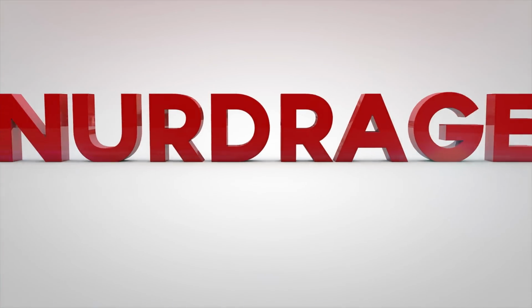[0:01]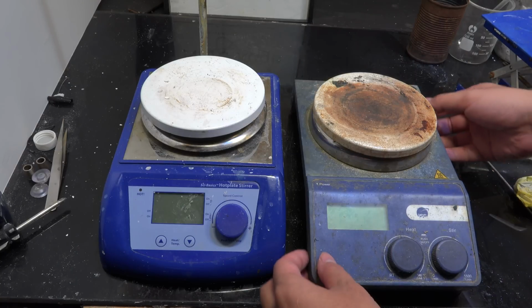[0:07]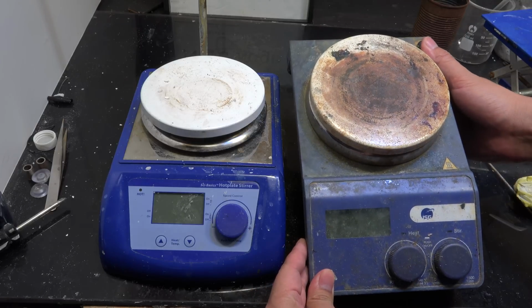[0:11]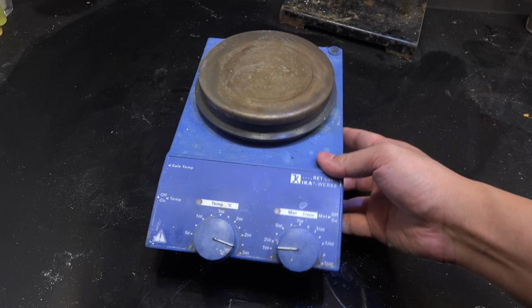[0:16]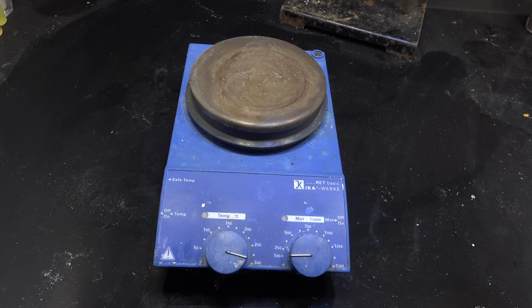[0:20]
In a previous video I asked for help in repairing my hotplate stirrers. I received a huge number of suggestions and offers and I'd like to thank you for helping me out. First, an engineer generously fixed my old IKA hotplate. The particular problem was beyond my ability to fix but I'm glad it was within theirs. If you're watching, thanks a lot.
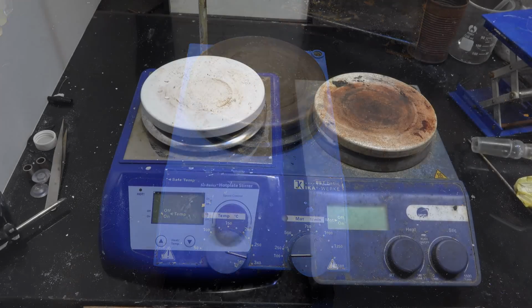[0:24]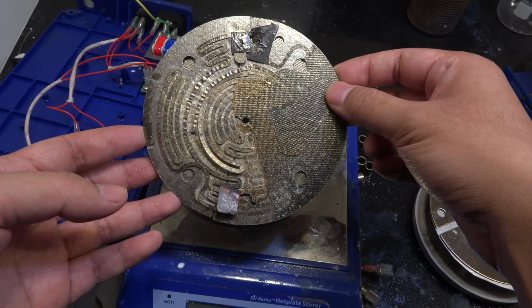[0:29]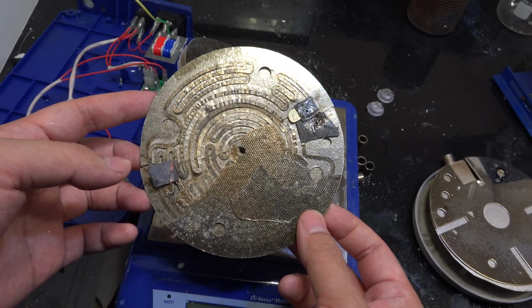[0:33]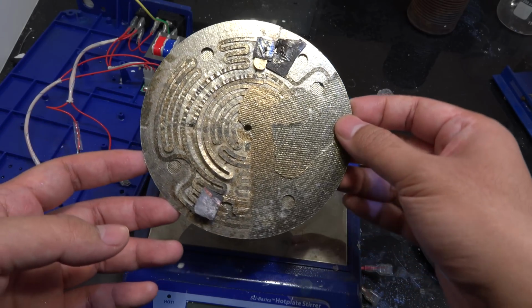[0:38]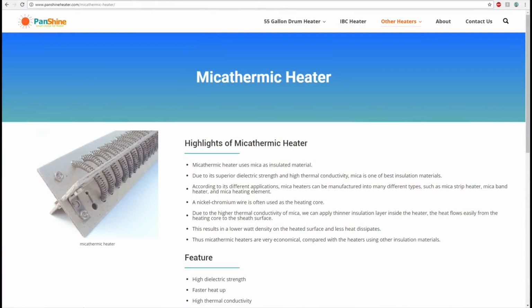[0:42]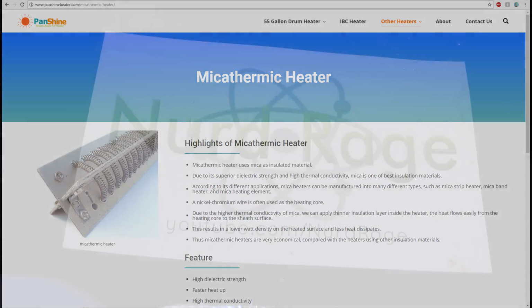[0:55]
Now my other two hotplates had burned out mica heating elements. In my old videos I asked for suggestions on how to replace them, if there were companies that could make them, or if anyone was willing to go in with me to group buy them. I received a huge number of suggestions and I was given a company in China that could make the mica heating elements for much cheaper and in smaller quantities than the one I originally found. Instead of paying $3000 for 100 units I was quoted $500 for 30, and that was just within my ability to buy on my own. So I did and here they are.
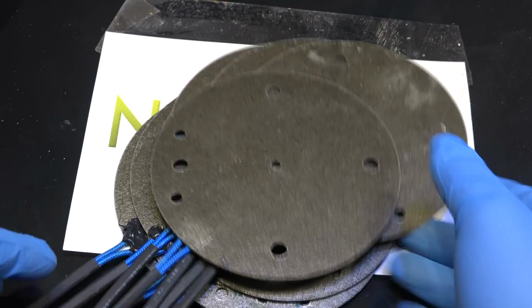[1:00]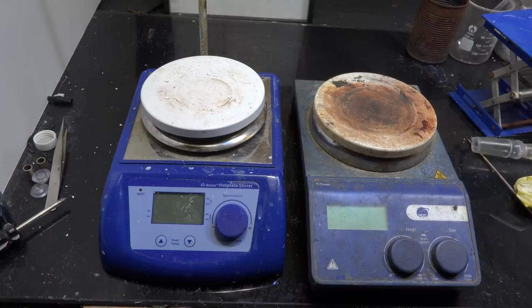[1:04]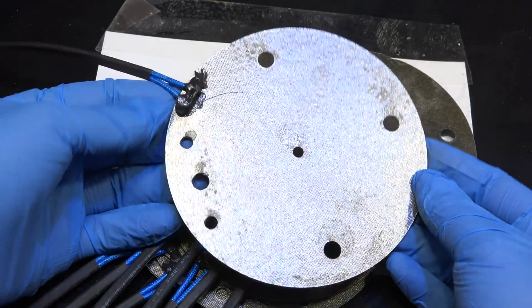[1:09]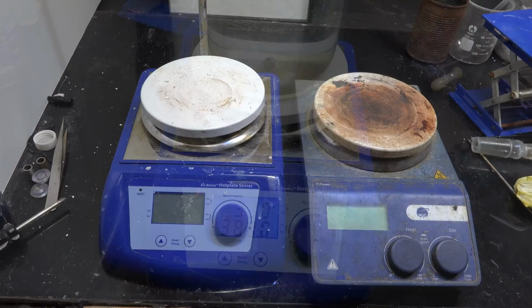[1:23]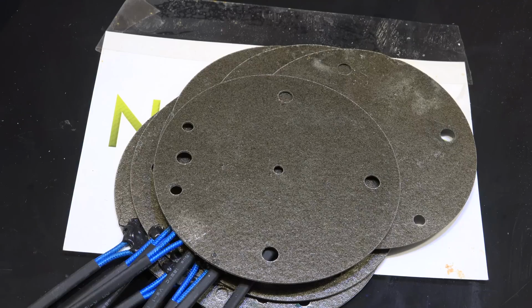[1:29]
Now I know I could have bought a whole new hotplate stirrer for that price and I may indeed do so in the future. But I really wanted to fix my two existing ones and having spare elements means I can be certain I'll always be able to fix them many times over. The certainty of being able to have two more working hotplates when I need them for years to come is slightly more valuable to me than having one new hotplate of uncertain lifetime and repairability. Especially since having two means one can be in service and one can be a backup. But I'm getting ahead of myself. Let's get these installed and tested.
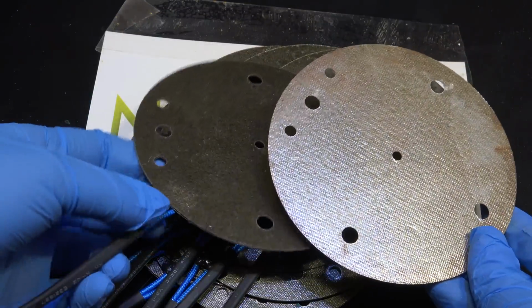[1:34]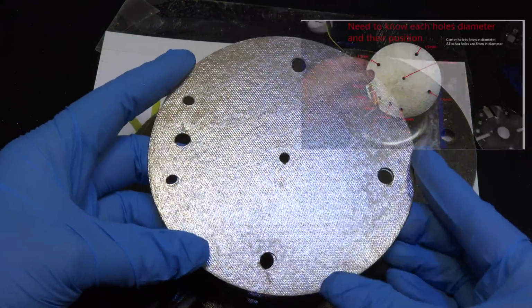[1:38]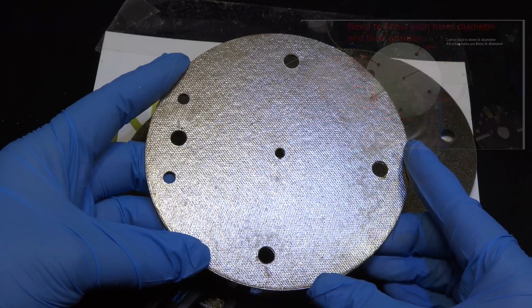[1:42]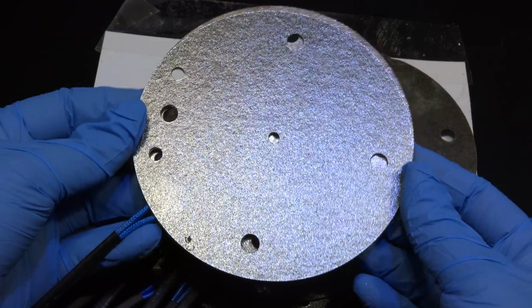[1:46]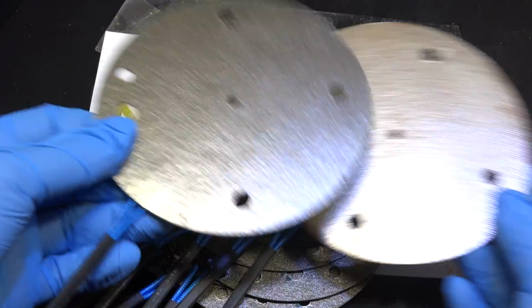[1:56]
Interestingly enough these holes match up perfectly with the elements they are replacing. Either the crude measuring picture I sent them of my burnt element was enough for perfect duplication, or this particular size and hole placement is pretty common and the company had the tooling and assembly line already on hand. Considering how willing they were to sell me just 30 units, which is well below the minimum order quantity of other companies, I think it's the latter.
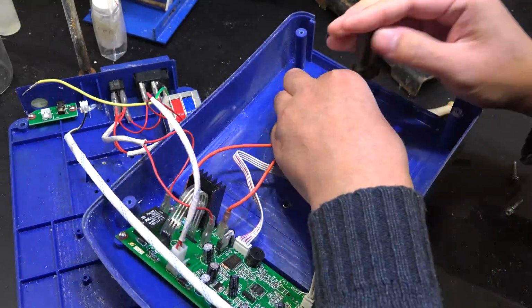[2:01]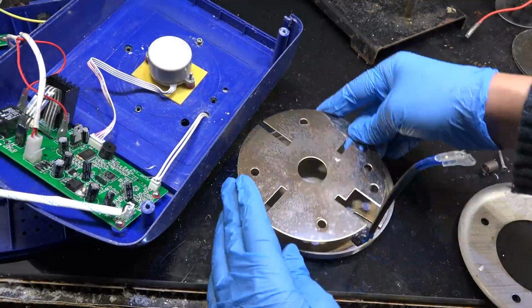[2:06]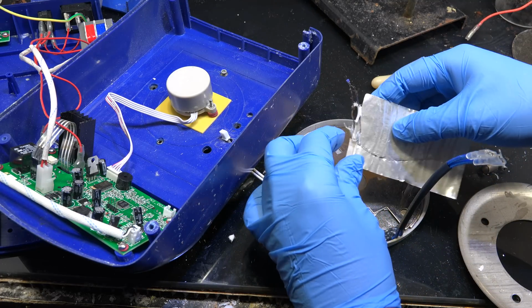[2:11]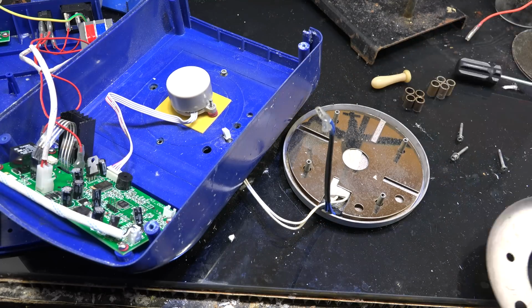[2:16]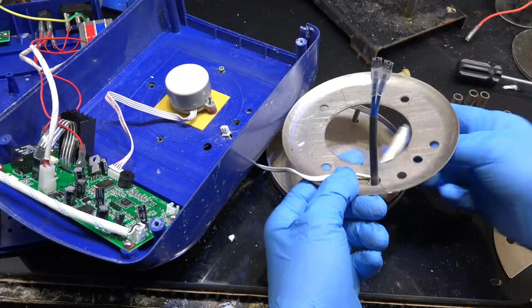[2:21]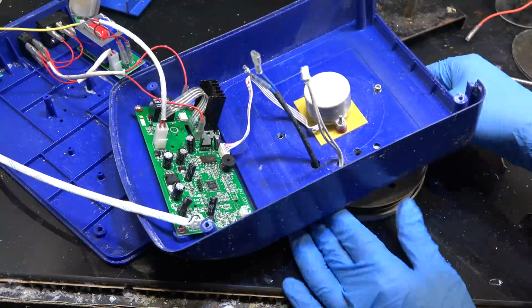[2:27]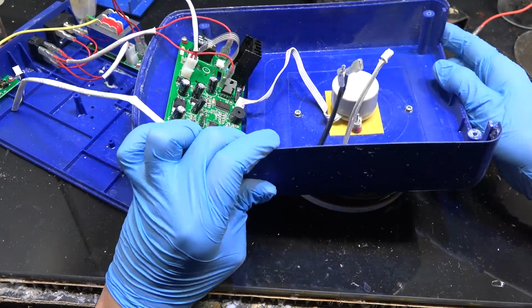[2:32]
First I'm going to repair the cheaper Cybasics brand hotplate. All I really gotta do is remove the old burned out heater element and replace it with a new element. The thermometer insulation has cracked and peeled off so I'm insulating that with a mica sheet. You know, I'm actually somewhat impressed with the quality of the lead wires of the new elements. It took the time to insulate them and use quality connectors. They could have saved a few cents and not bothered, but the fact they did raises my hope a bit that the nichrome foil element itself is better engineered than my previous elements. Only time will tell but score one for this Chinese manufacturer.
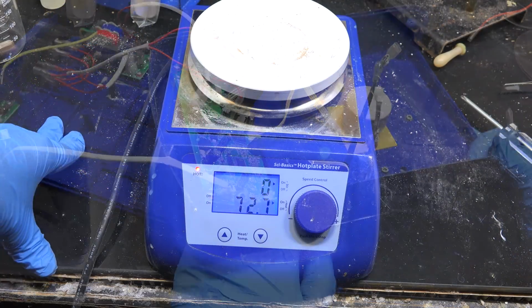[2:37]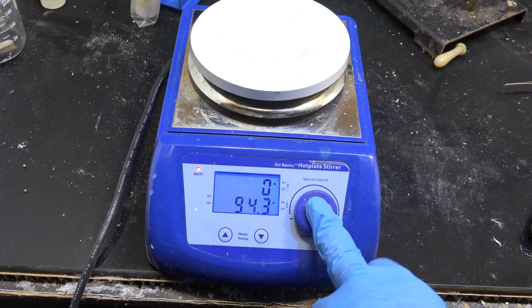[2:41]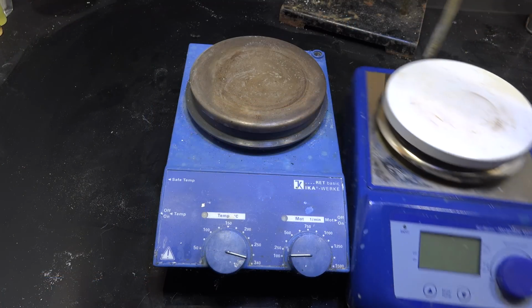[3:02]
And there we go, this is heating up quite nicely. It works. Interestingly enough you can see the hotplate smoking. Don't be alarmed, this is normal for a brand new element being turned on. The resins, machine oils and adhesives used during manufacture are being burned off. After several minutes of high heat the plate will stop smoking and be ready for use. Obviously do this part in a fume hood. Anyway, I now have another hotplate stirrer back in service. Let me go to the next one.
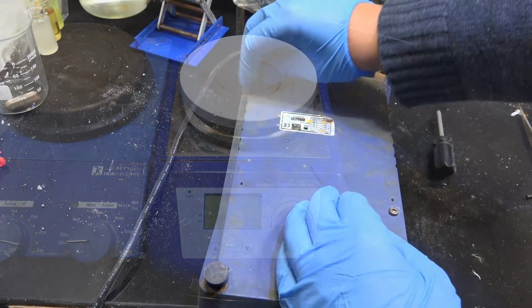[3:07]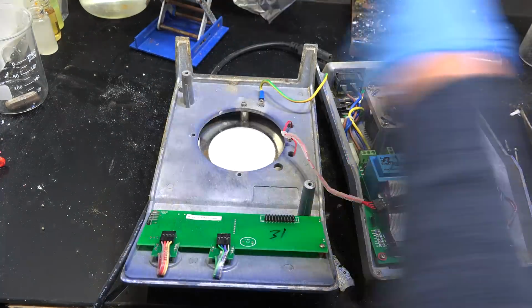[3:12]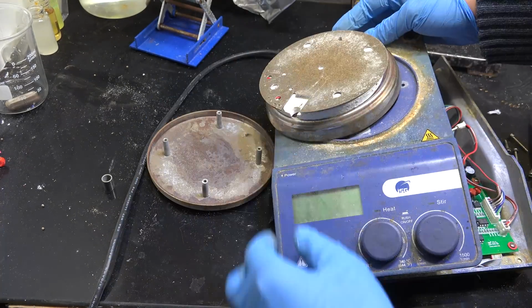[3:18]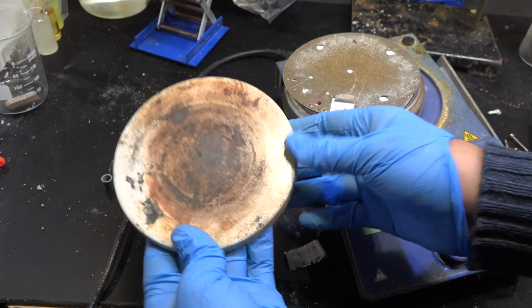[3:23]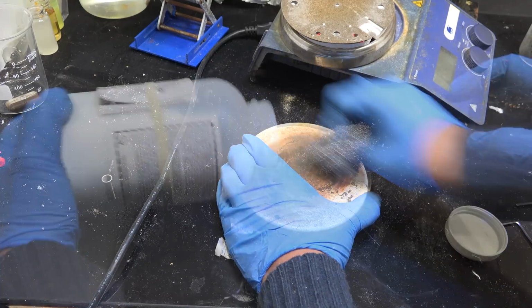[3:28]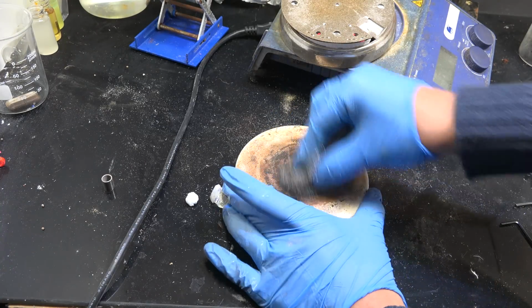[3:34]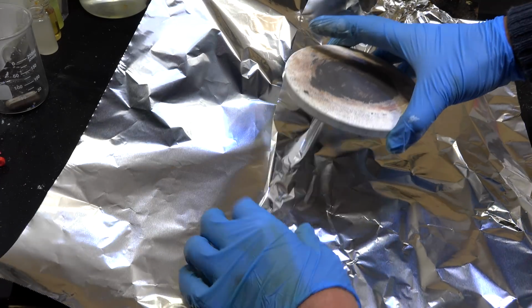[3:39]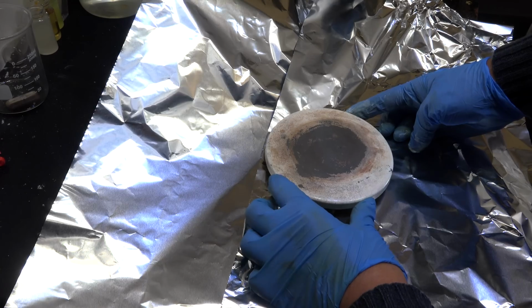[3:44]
This ISG brand hotplate is actually a rebranded Dragon Labs or SciLogex hotplate. Let me take it apart. You know, while I'm here and have the hotplate top disassembled, I might as well clean and resurface this thing. It's been through hell and I won't get another opportunity like this for a while. First I'm going to grind off the residues with steel wool. To help it along I'm going to use some oxalic acid and hydrochloric acid. Now I'm moving aside the hotplate unit and laying down some foil. Here's our chemically cleaned, ground and washed hotplate top, thoroughly dried. Now it just looks like it's been through war and not hell.
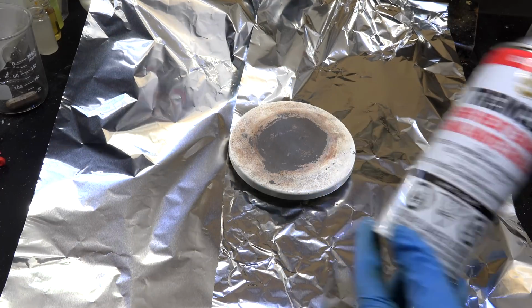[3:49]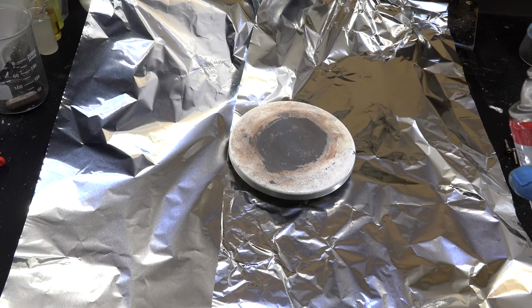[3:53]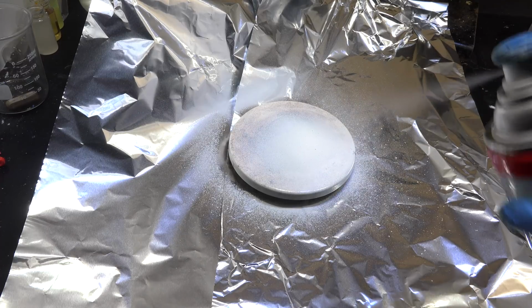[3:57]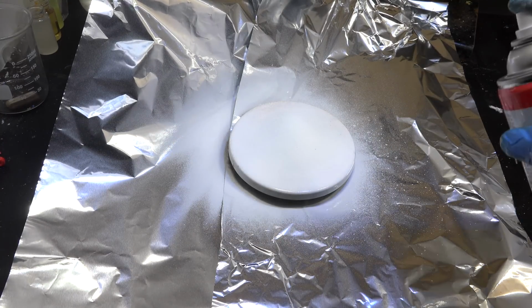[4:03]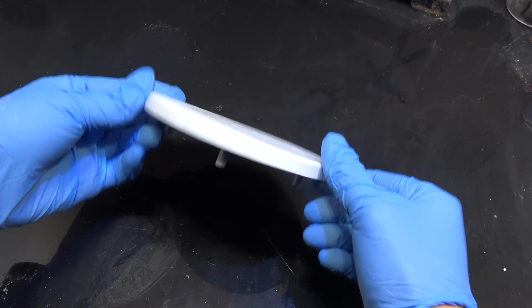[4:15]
To resurface, this is pretty easy. We spray on this high temperature enamel paint. Usually you apply two separate coats but I don't need my hotplate looking new. I just need it to look less like a meth lab auction sale. Most labs don't bother restoring the coating at all since it reduces thermal transfer ever so slightly. I wouldn't bother either but this hotplate is essentially on display in my videos. I might as well make some effort to make it look good. Anyway, let me leave it overnight to dry. And here we are, a resurfaced hotplate top.
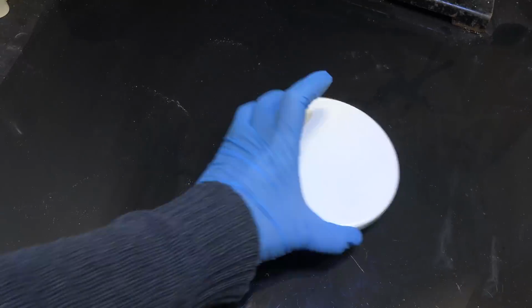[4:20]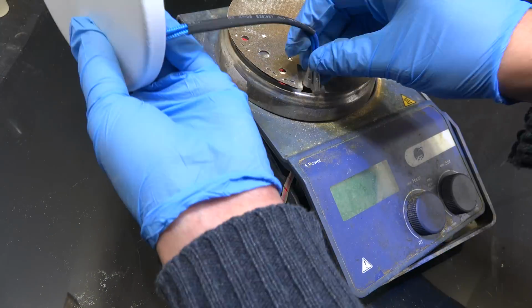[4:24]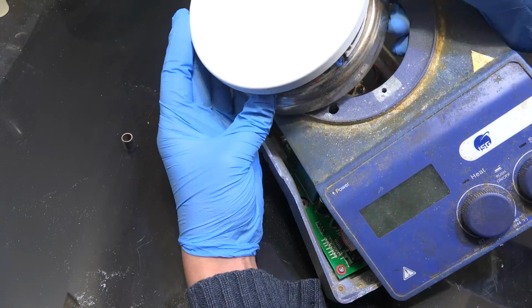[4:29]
Okay, let's get back to installing the new element. Now I'm not certain how long these elements will last in the long term but you know what, let's make an experiment out of that question. In one year remind me to make another video commenting on the reliability of these elements over that year.
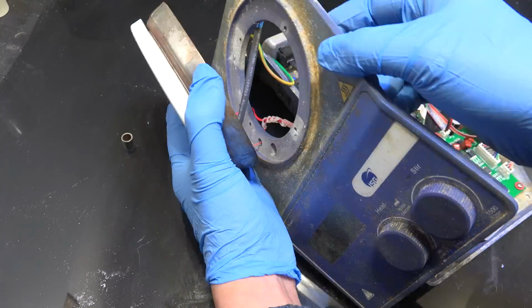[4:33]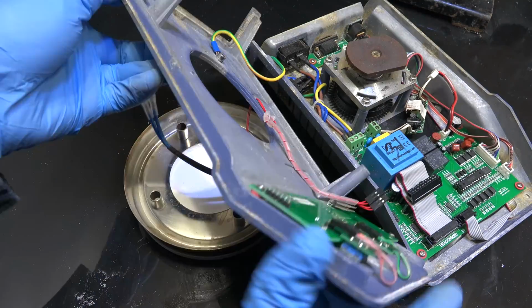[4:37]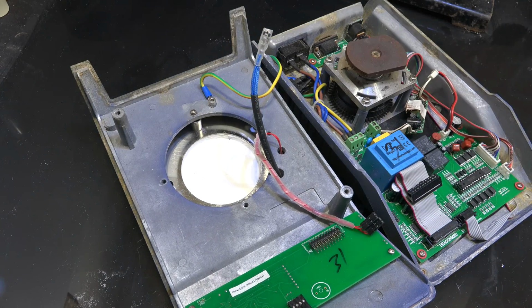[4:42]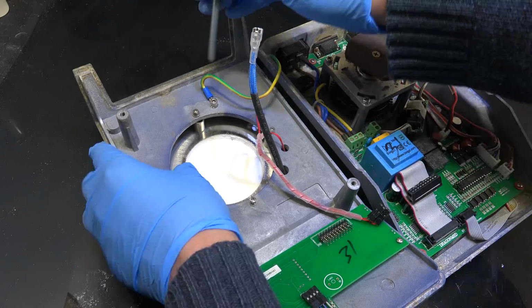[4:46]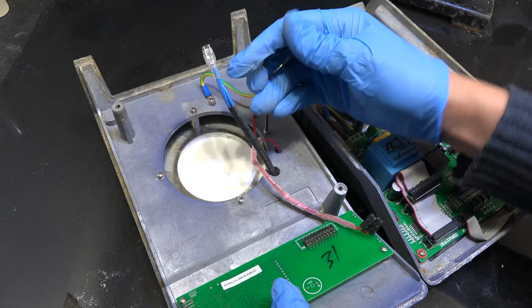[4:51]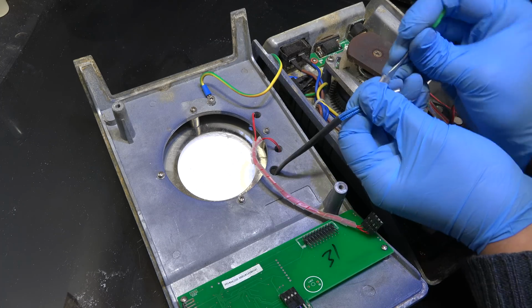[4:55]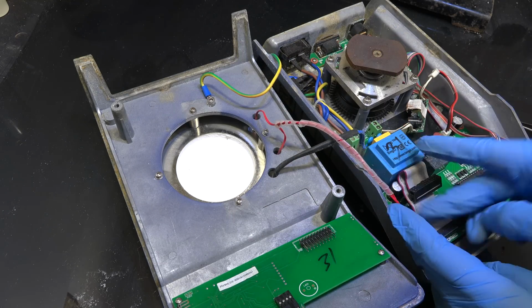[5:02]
Now I had a lot of suggestions for building a hotplate from scratch. I do intend to do that some day but I needed working hotplates as soon as possible. I had many suggestions to build my own heater element using nichrome wire and I tried but I failed every time. The wires kept flexing and moving out of place and then shorting out. I didn't have the mechanical skill to do it. I'm not saying it can't be done or even that it's hard. I'm just that bad that I couldn't make a wire element myself and had to get these elements manufactured. If you can build your own wire elements then by all means do that.
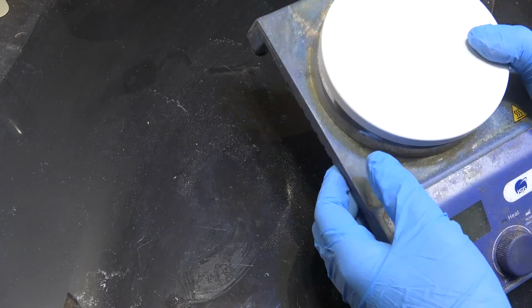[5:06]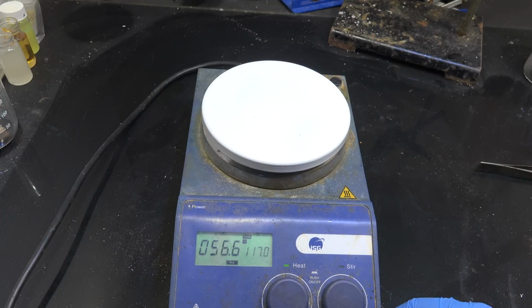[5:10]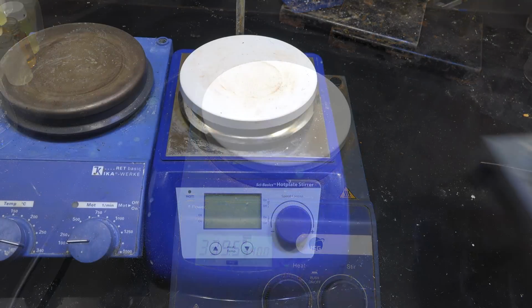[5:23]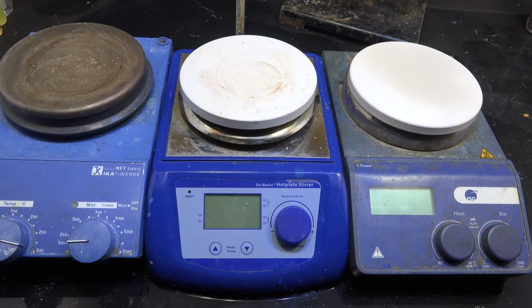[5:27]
Anyway, a fully refurbished hotplate. Let me test it out. And it's working too. Looks like I'm back in business. Time to start on some real chemistry again. Thanks again my viewers for helping me out. One of you outright fixed my hotplate and some others found a manufacturer for the heating elements of these other hotplates. I went from zero to three functioning hotplates and I couldn't have done it without your help. Thanks.